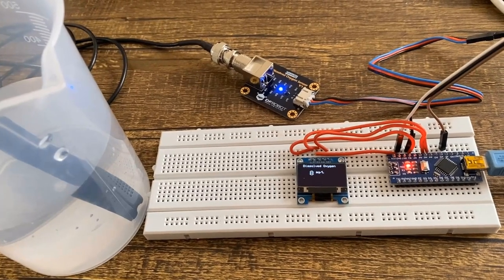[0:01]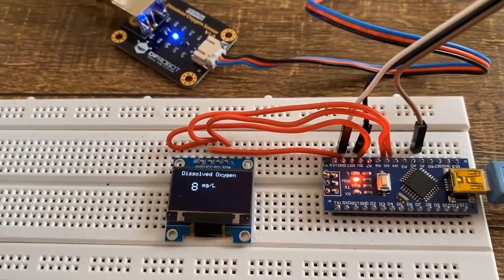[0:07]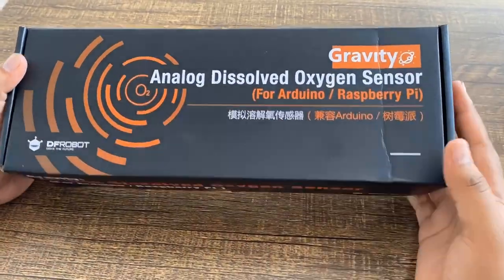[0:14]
In this tutorial, we will learn how to make your own dissolved oxygen meter. A dissolved oxygen meter measures the dissolved oxygen of any liquid and is measured in milligrams per liter.
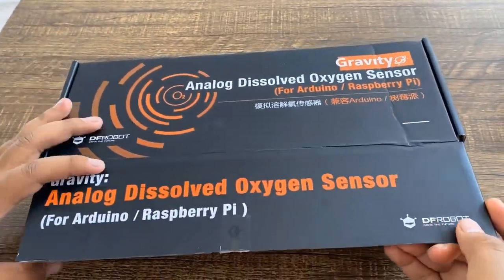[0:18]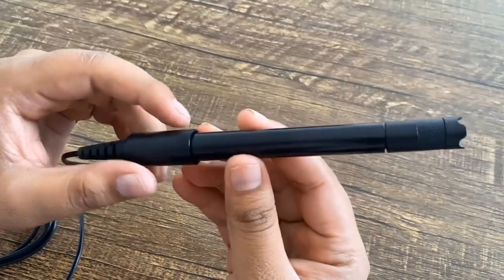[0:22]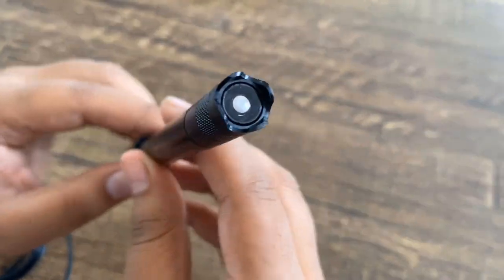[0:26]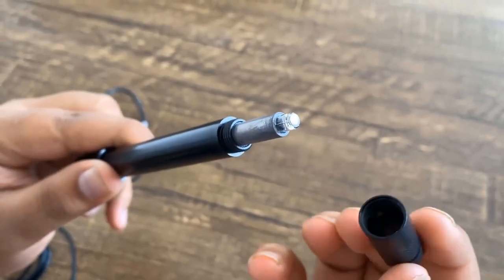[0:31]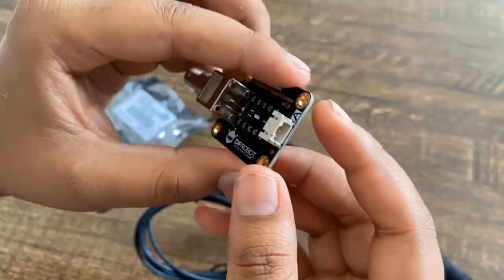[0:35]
Recently, I purchased an analog dissolved oxygen sensor from DFRobot. So you can see this is a Gravity analog dissolved oxygen meter kit from DFRobot. This is a low power dissolved oxygen meter with a galvanic probe that works between 3.3 volt to 5 volt. It has a replaceable membrane cap at the top with a simple BNC connector to signal connector board.
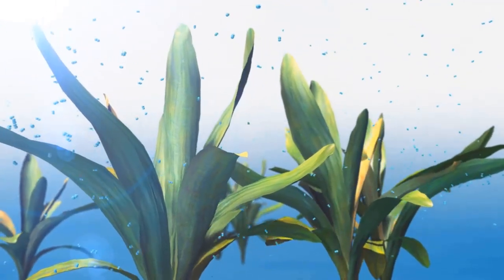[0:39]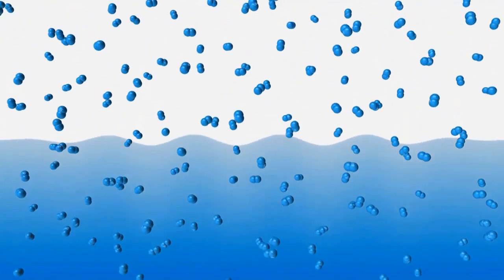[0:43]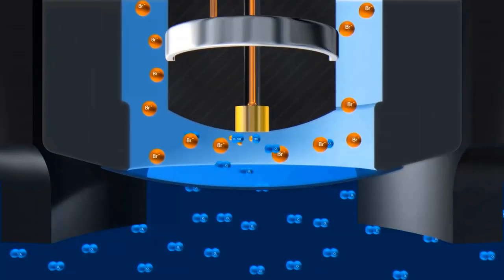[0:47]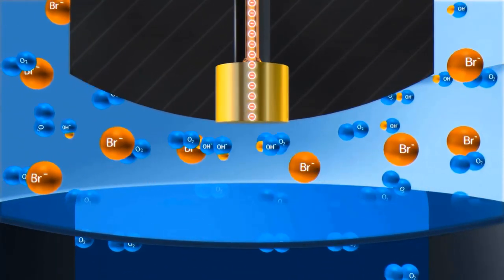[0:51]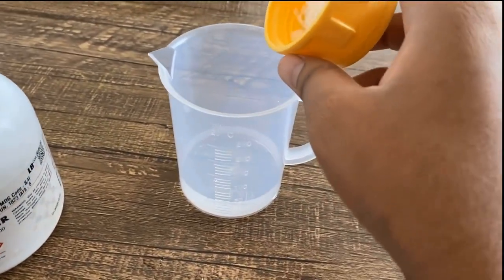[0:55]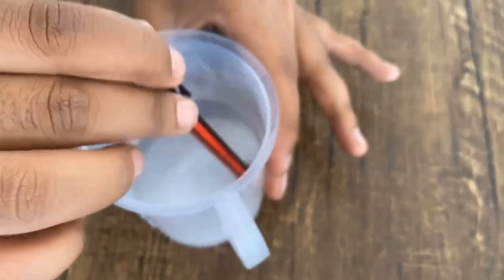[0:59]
We will learn how oxygen gets mixed in water, or the source of oxygen. We will also learn about the principle behind the dissolved oxygen meter and its partial pressure as well as the oxygen concentration in water. Then, using a sodium hydroxide crystal and water, we will make a filling solution for the probe. This solution is filled in the membrane cap and used with the sensor.
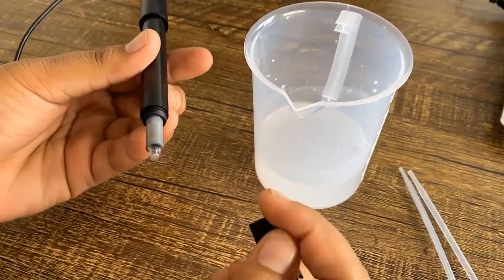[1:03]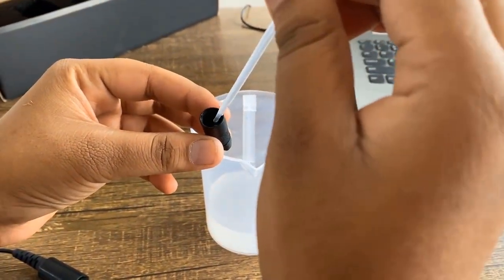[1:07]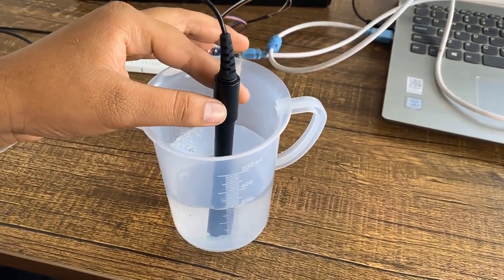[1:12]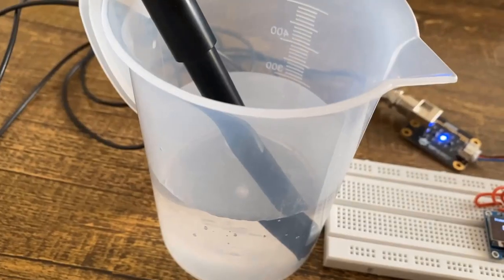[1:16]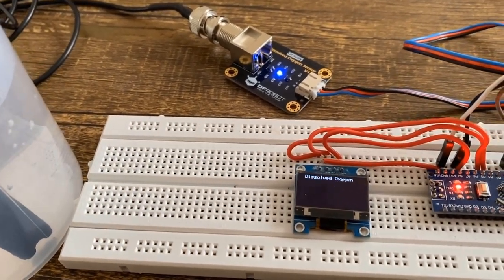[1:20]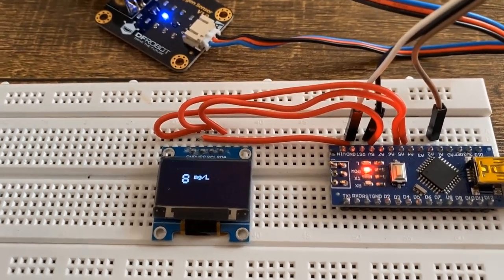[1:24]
The method for filling the solution as well as the quantity of the solution and its strength is also explained in this video. And finally, we will learn a method for calibrating the sensor. When the calibration factor is known, we will make our own dissolved oxygen meter using an Arduino board and OLED display. This dissolved oxygen meter can be used in aquaculture, aquatic life, environmental monitoring, and for laboratory applications. So, without any delay, let's get started.
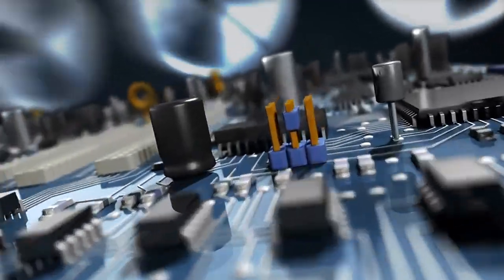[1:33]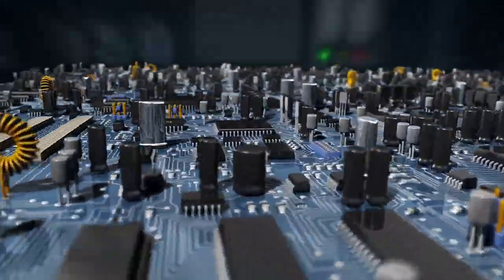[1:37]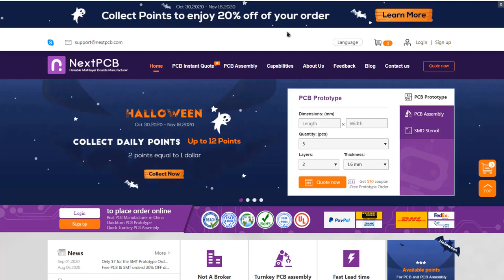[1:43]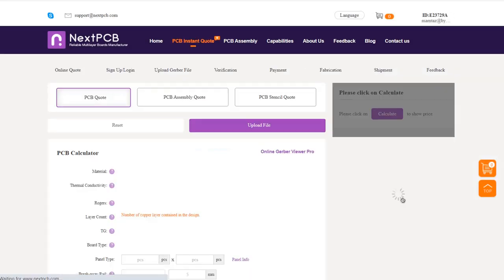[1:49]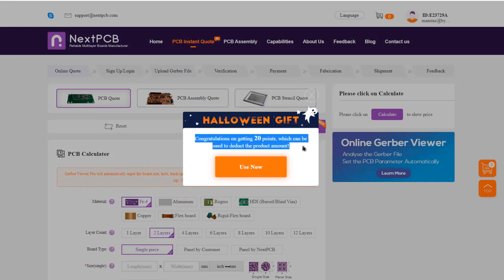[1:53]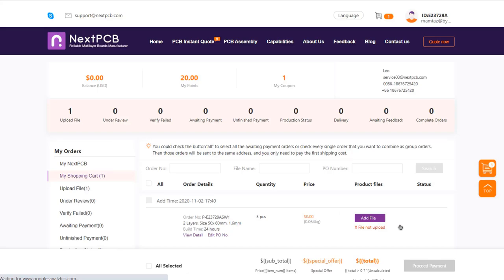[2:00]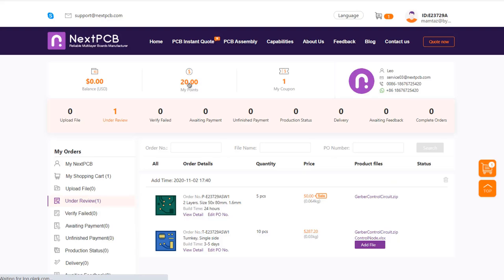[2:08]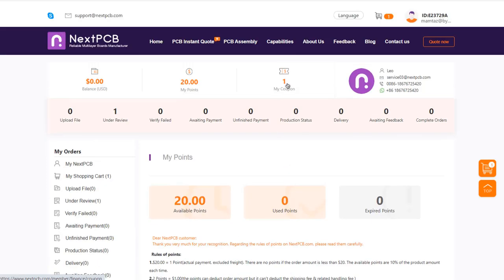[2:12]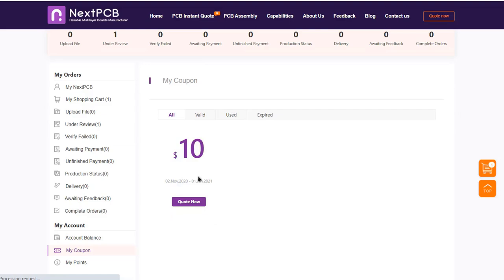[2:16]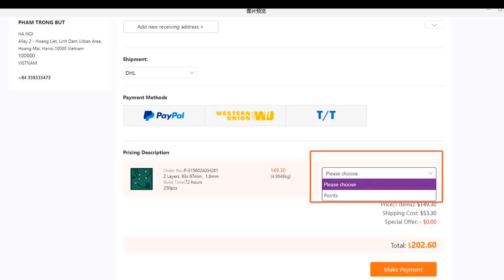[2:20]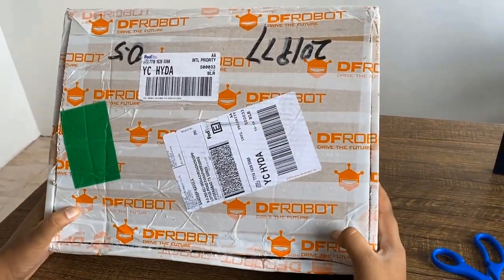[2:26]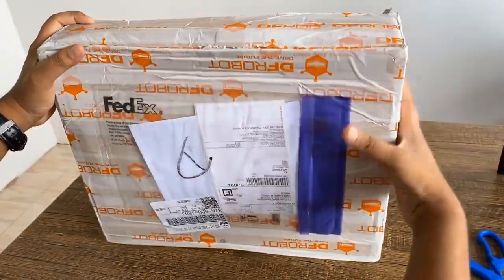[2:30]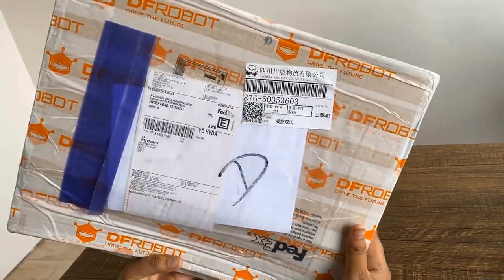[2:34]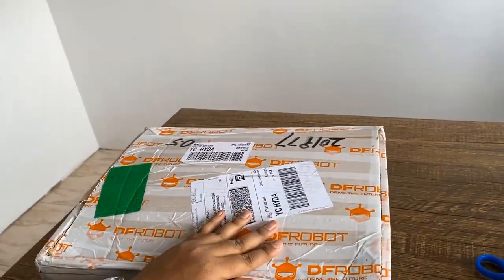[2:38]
So this is the courier from DFRobot sent through FedEx a couple of days ago. I received it after 1 week. The package looks very large but weighs very little. So now let me open the packet and check what is inside the box.
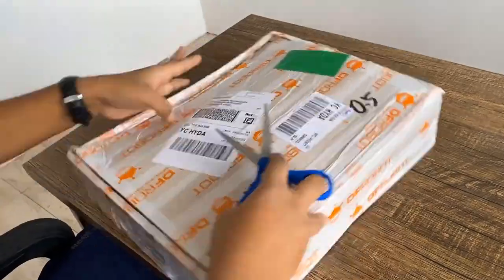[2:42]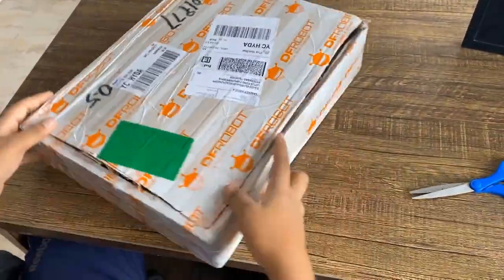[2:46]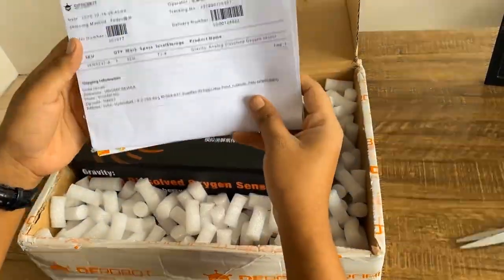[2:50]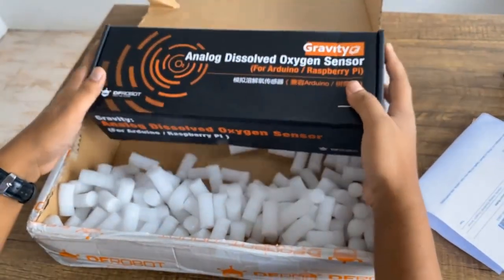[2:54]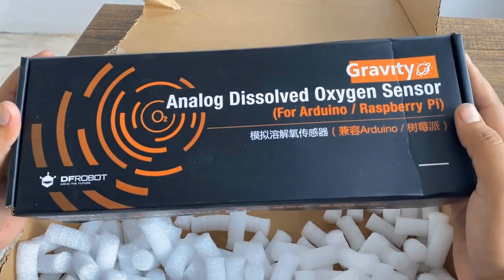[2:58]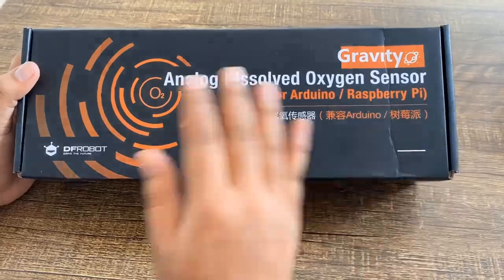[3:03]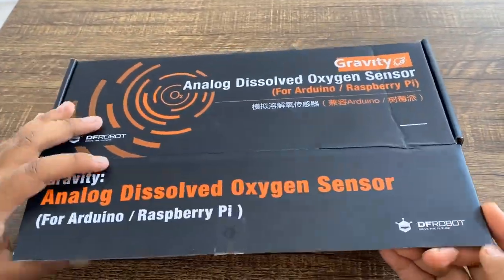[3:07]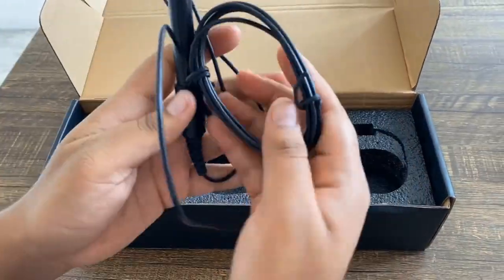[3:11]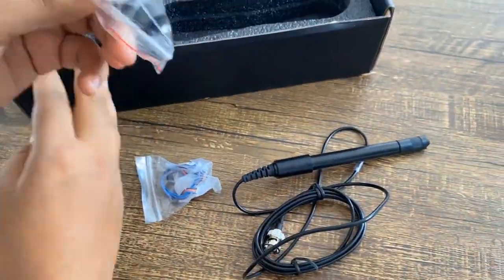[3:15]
So here we go, it has another box that contains the sensor kit. This is a Gravity analog dissolved oxygen sensor kit that can be used for Arduino, Raspberry Pi, and ESP8266 or ESP32. Well, inside the package we have multiple tools that need to be assembled together. So I can see there are 4 to 5 different units.
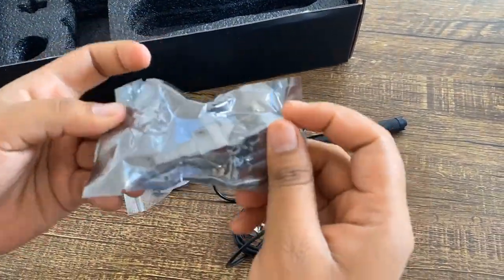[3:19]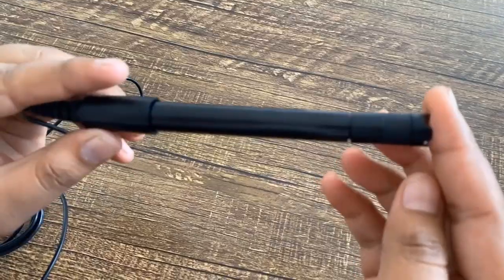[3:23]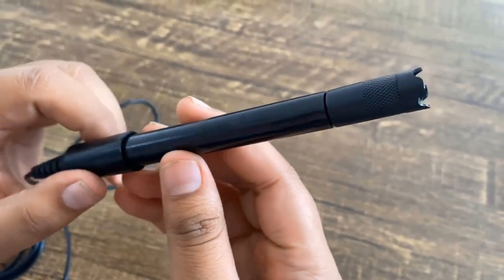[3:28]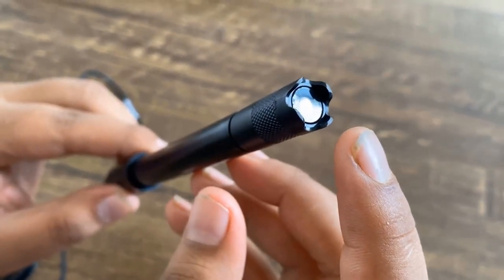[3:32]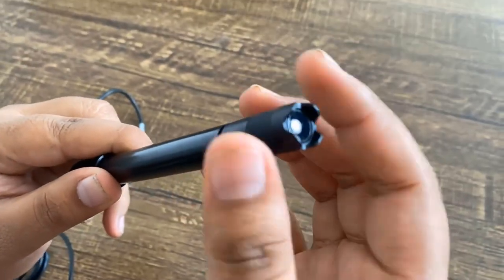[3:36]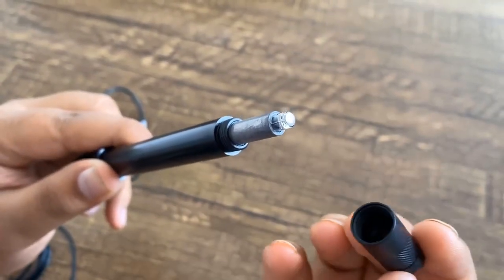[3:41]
This is a dissolved oxygen sensor probe that works at 3.3 volt or 5 volt. The output voltage is 3.3 volt and it has the ability to measure dissolved oxygen from 0 to 20 mg per liter. At the top of the sensor, there is a membrane cap that is removable and replaceable. This is a galvanic probe whose working will be explained later in this video.
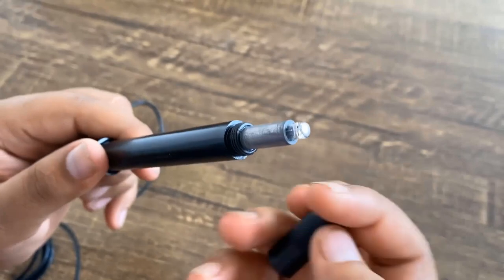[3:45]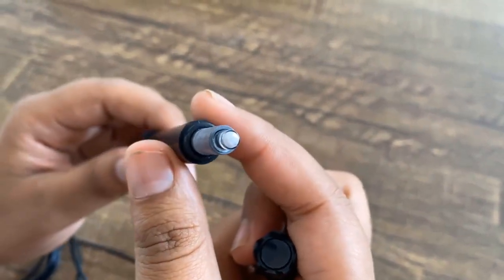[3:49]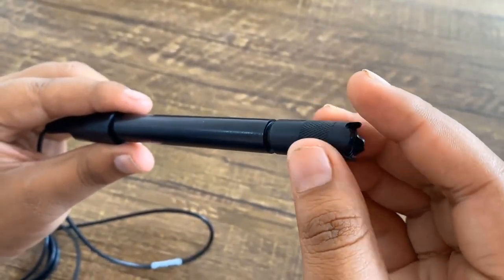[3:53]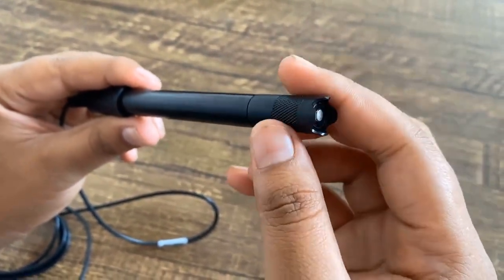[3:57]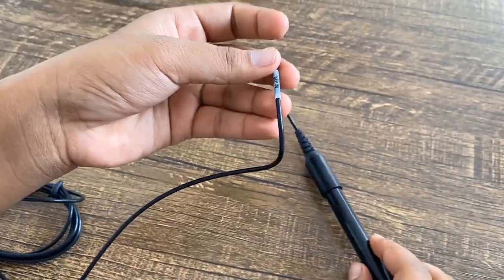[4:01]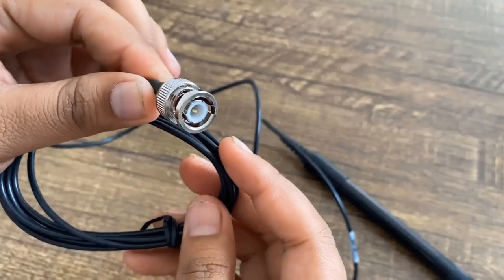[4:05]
Galvanic dissolved oxygen sensors consist of two electrodes, an anode and a cathode. Both of these electrodes are immersed in electrolytes. An oxygen permeable membrane separates the anode and cathode from the measured water. This chemical reaction produces an electrical signal which is measured by Arduino. The cable length is 2 meters and has a BNC connector at the end.
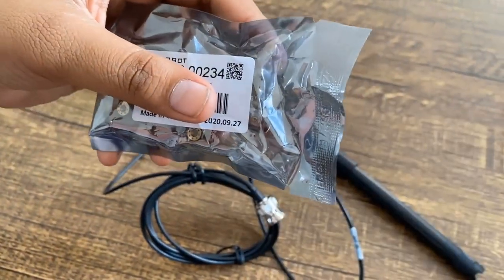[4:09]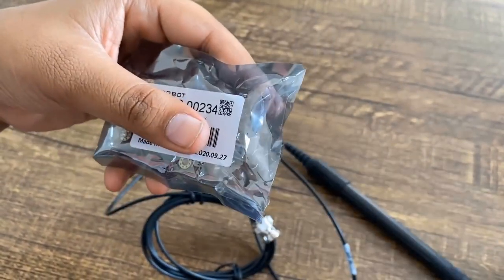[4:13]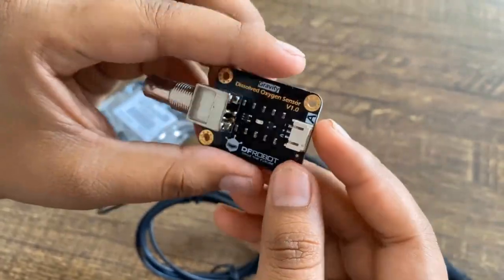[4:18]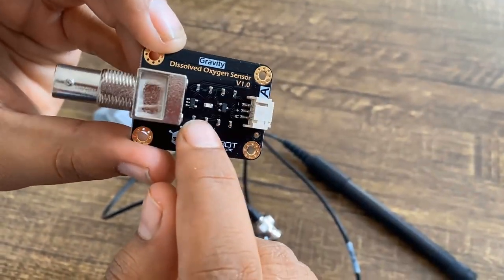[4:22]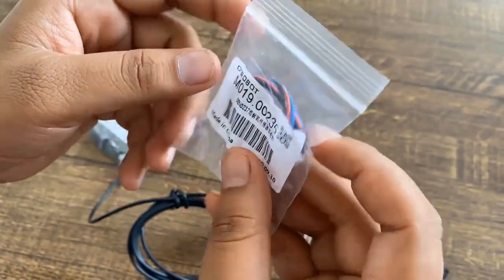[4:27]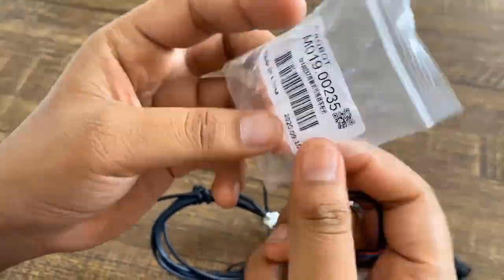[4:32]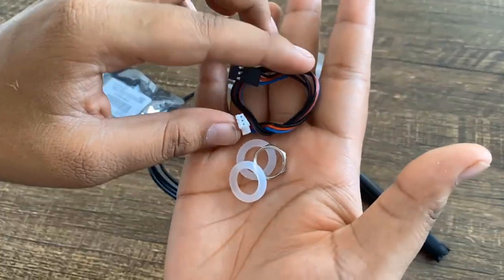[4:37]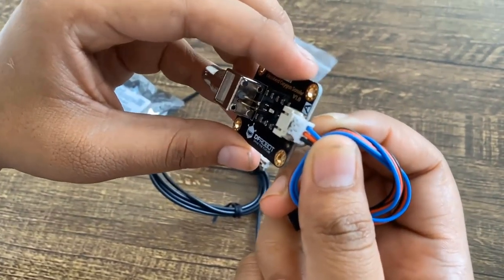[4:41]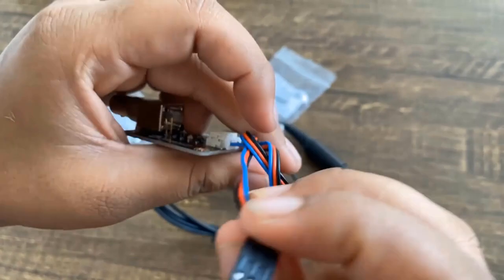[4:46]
The signal converter board also has a BNC connector which can be directly connected to the galvanic probe. The signal converter board basically amplifies the minor voltage difference to a readable signal that can be detected by Arduino. The signal converter board is plug and play and has good compatibility. On the other end, it has 3-pin connectors with VCC, GND, and analog output pin. Using the 3-pin connector, the sensor can be directly connected to any microcontroller unit. The signal converter board takes 98% full response within 90 seconds.
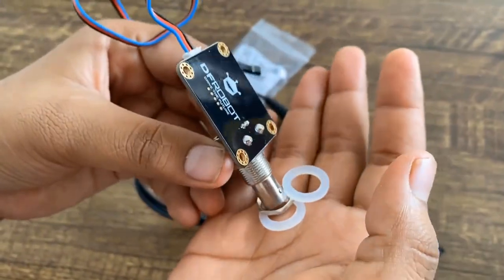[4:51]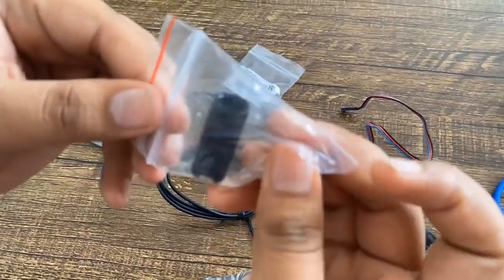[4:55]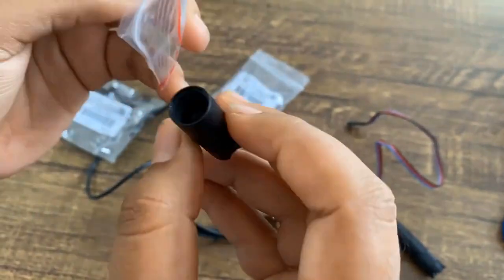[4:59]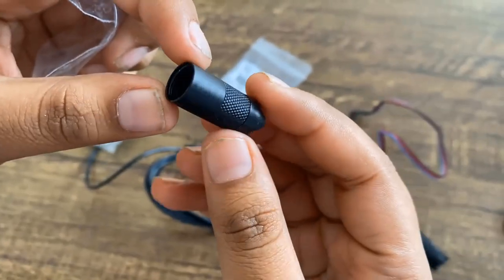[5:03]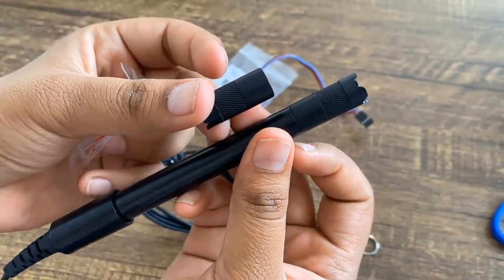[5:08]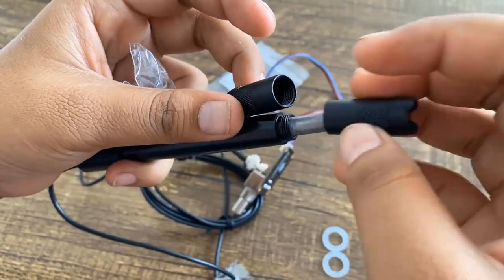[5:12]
The oxygen permeable membrane in the membrane cap is sensitive and fragile. Use caution when handling it. Fingernails and other sharp objects should be avoided. This is a membrane cap which needs to be maintained every 1 to 2 months in muddy water and 4 to 5 months in clean water. The solution replacement period is every 1 month.
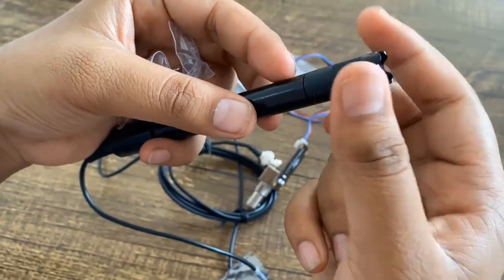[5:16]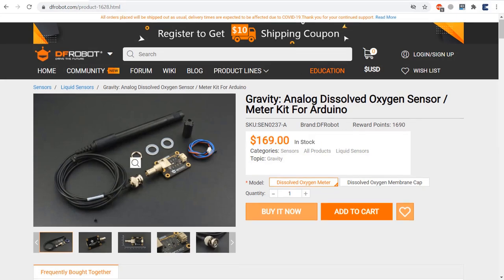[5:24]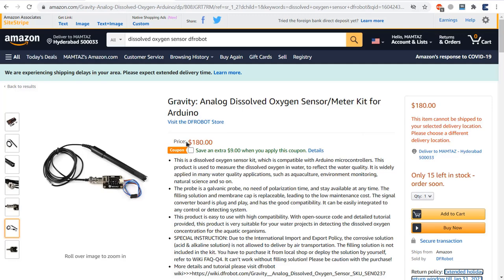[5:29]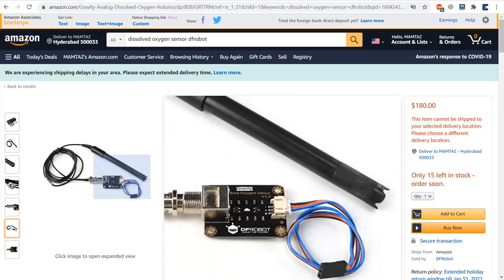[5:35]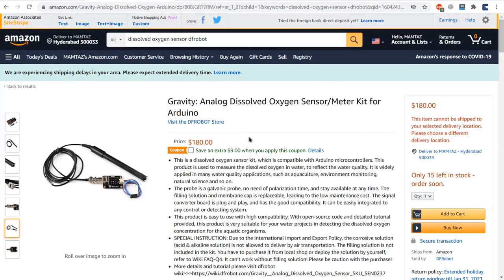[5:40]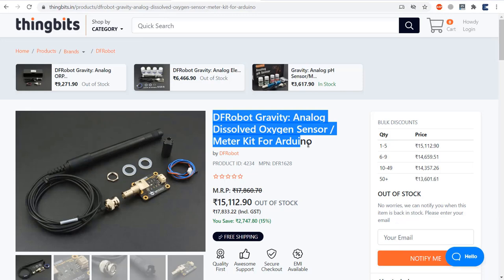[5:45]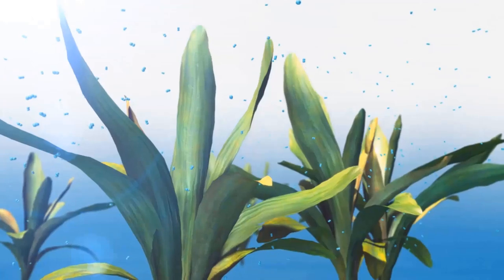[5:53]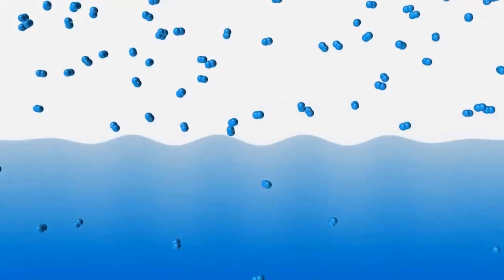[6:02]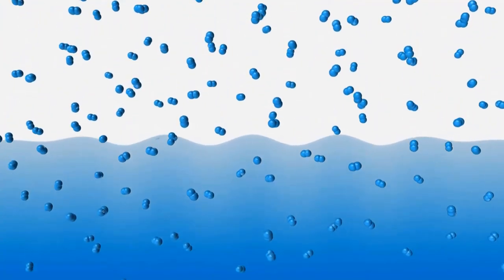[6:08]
Now let's learn about the principle behind the oxygen measurement. Oxygen penetrates the liquid in different ways, for example, through oxygen producing plants, waves, or a gas exchange with the atmosphere. At the water surface, the oxygen molecules migrate from the atmosphere into the water and vice versa. Once the oxygen is in the water, it distributes evenly to achieve uniform distribution in space.
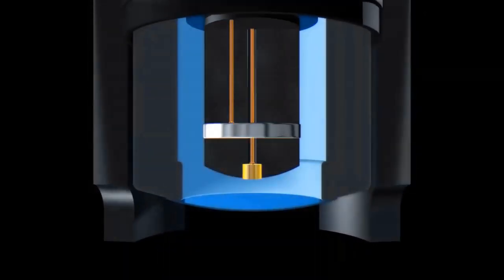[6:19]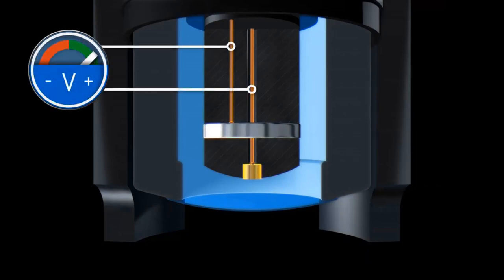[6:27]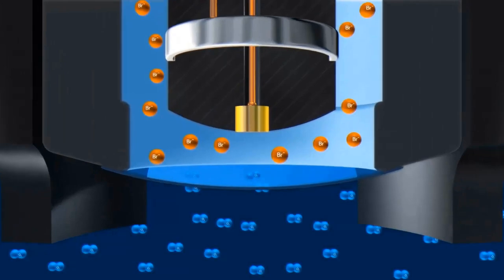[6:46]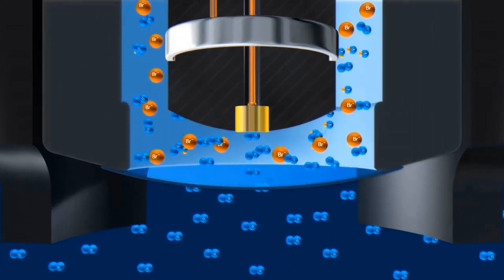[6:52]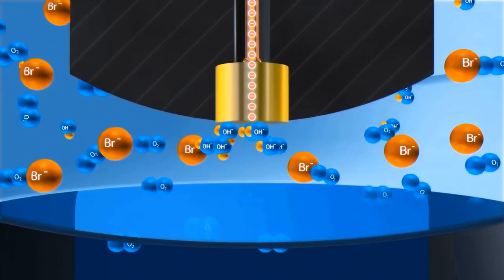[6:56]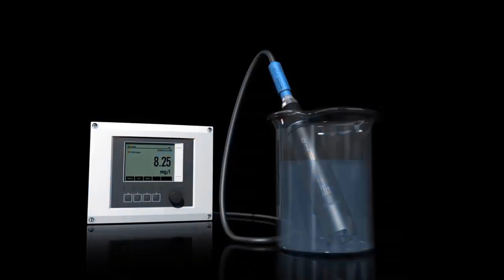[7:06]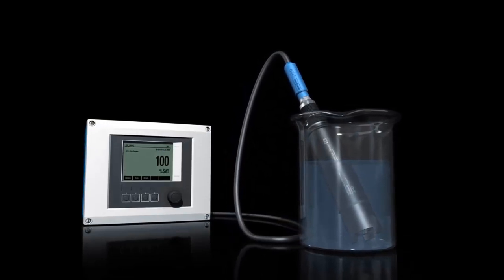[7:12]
A galvanic type sensor usually consists of a gold cathode, also called a working electrode, and a silver anode, the counter electrode. The DC voltage is applied to both the electrodes. The cathode and anode are both located in a reaction chamber that is filled with an electrolyte. The reaction chamber is separated from the medium by a membrane. This porous membrane allows the dissolved oxygen to diffuse into the sensor. When the sensor is immersed in a medium containing oxygen, the difference in the partial pressure of the oxygen between the inner and the outer membrane walls leads to the diffusion of oxygen through the membrane. The diffused oxygen is reduced at the gold cathode in the reaction chamber, resulting in a current flow that is proportional to the amount of transformed oxygen. The current is processed by the signal converter board and displayed as oxygen concentration, partial pressure, or a percentage saturation.
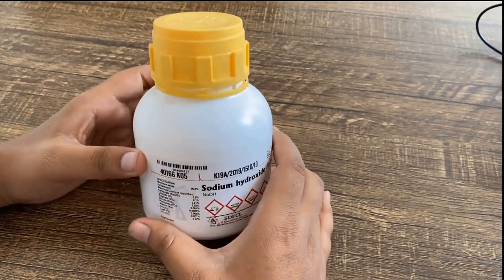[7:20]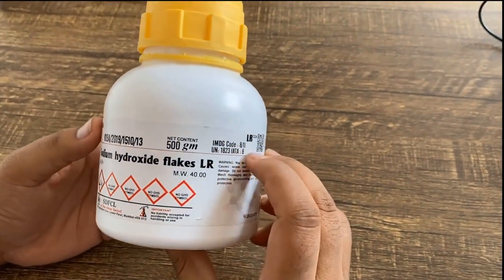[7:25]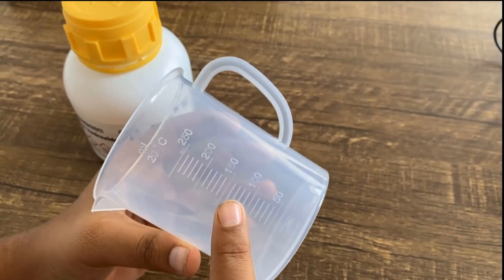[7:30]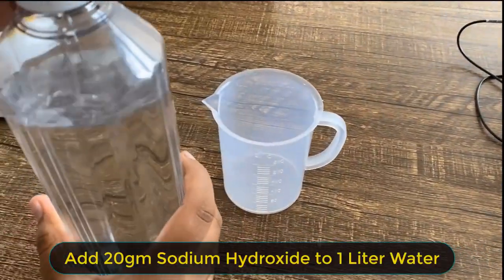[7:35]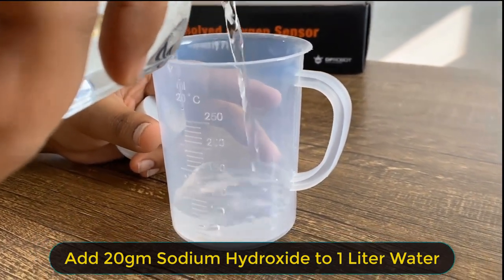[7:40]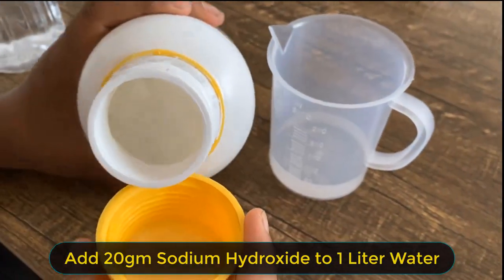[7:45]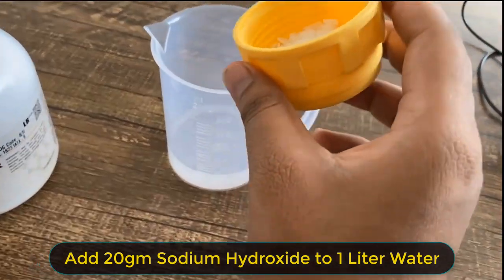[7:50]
Now let us prepare the solution for filling the membrane cap. The solution is prepared using sodium hydroxide and water. The normality of the solution should be 0.5 normal. So you need a few grams of sodium hydroxide and a measuring cylinder. To prepare a 0.5 normal solution, add 20 grams of sodium hydroxide crystals to 1 liter of water. As the sodium hydroxide solution is strongly corrosive, protective gloves should be put on before handling the solution.
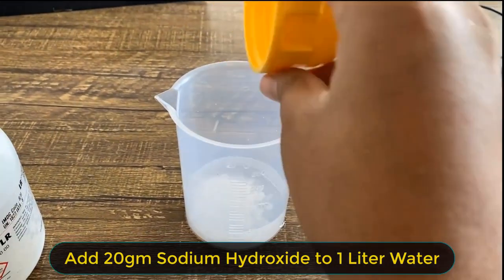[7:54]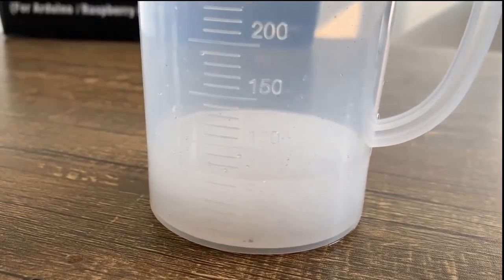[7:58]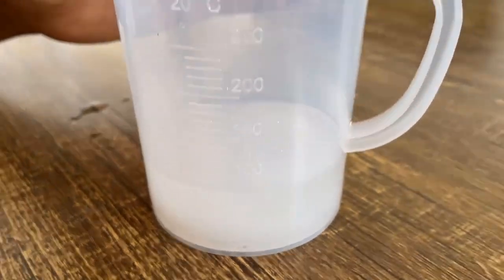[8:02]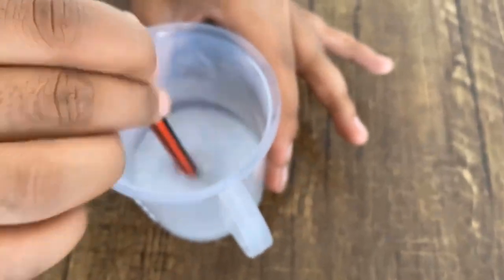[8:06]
If the solution accidentally drops onto the skin, wash your skin with plenty of water immediately. After mixing the NaOH with water, stir it so that the sodium hydroxide completely dissolves in the water. A lot of heat is produced during this process, so let it cool down before using it.
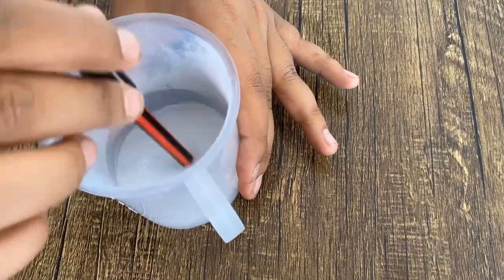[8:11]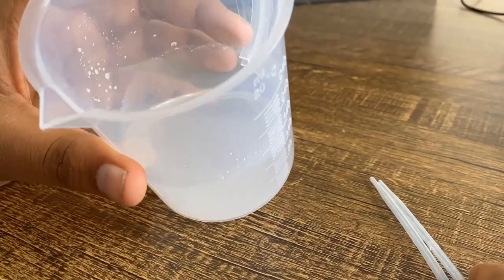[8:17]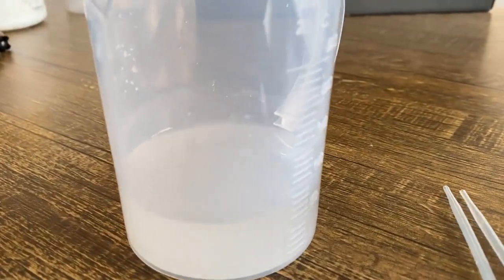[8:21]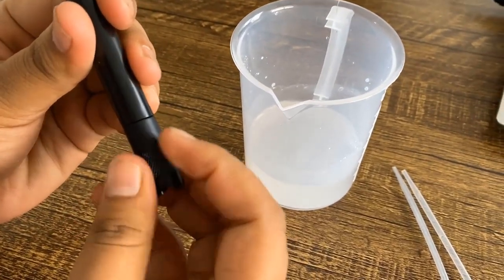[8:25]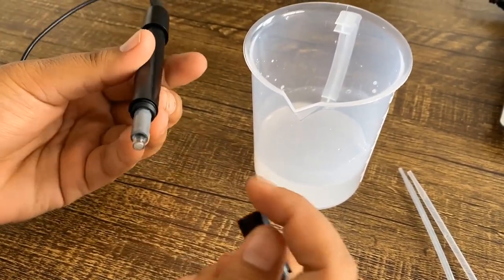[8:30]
Now let us prepare the probe. We need to fill a 0.5 mole per liter NaOH solution to 2/3 volume of the cap. For that, first unscrew the membrane cap from the probe. Now, use this pressure filling pipe to fill the membrane cap.
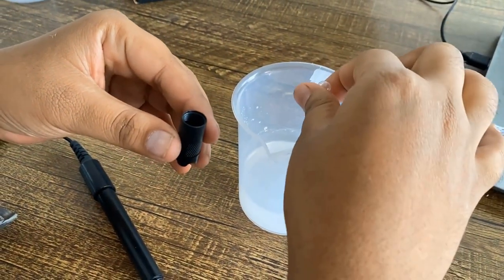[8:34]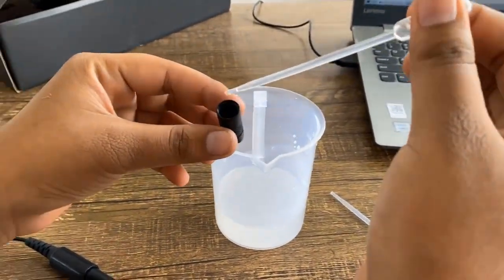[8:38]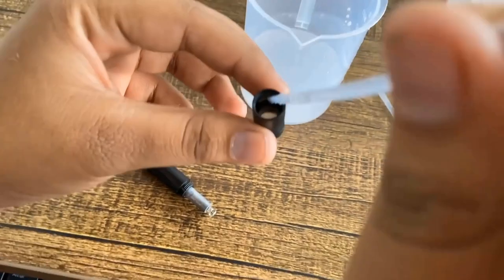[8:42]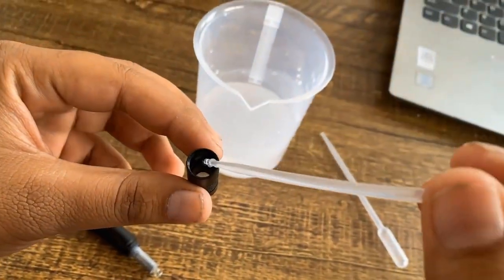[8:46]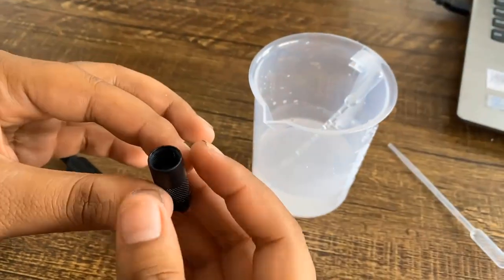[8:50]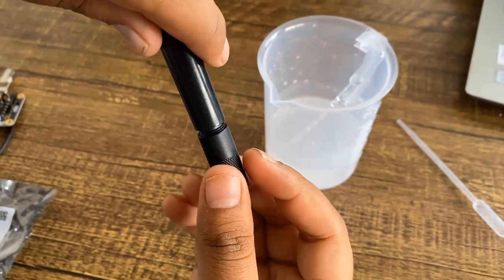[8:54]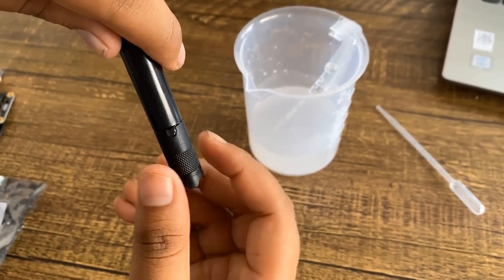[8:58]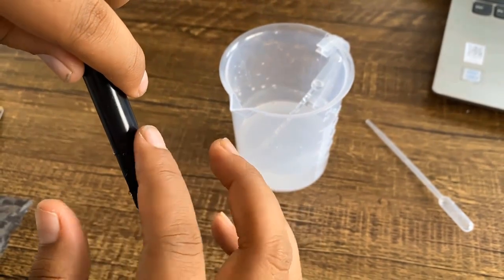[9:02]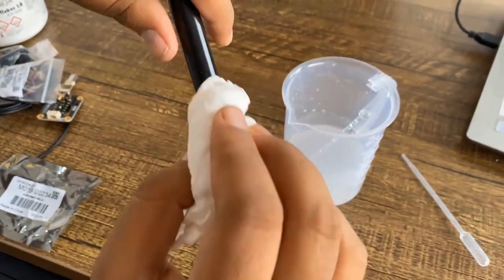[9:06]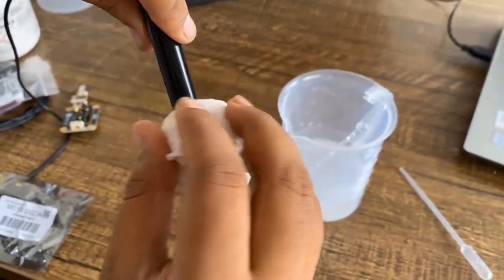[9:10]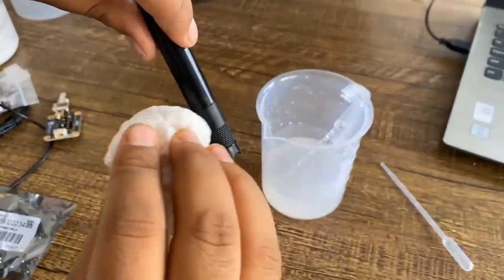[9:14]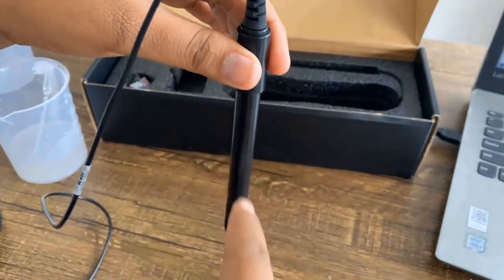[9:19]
Carefully screw the cap back onto the probe. It will be nice if a little bit of solution overflows out of the cap to ensure the probe is fully filled with NaOH solution. The best way is to fill about 2/3 volume of the cap. A little bit of overflow when screwing the cap back onto the probe is okay. Clean the overflowed solution with a tissue. Make sure the probe is in a vertical position with respect to the horizontal plane.
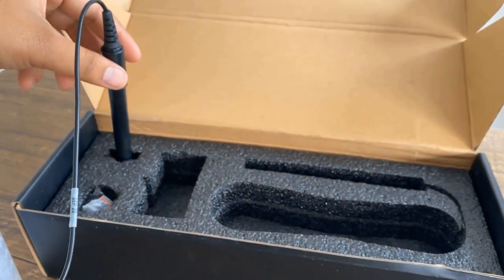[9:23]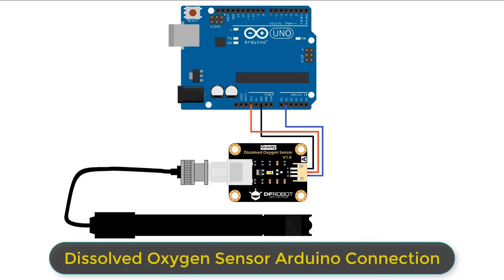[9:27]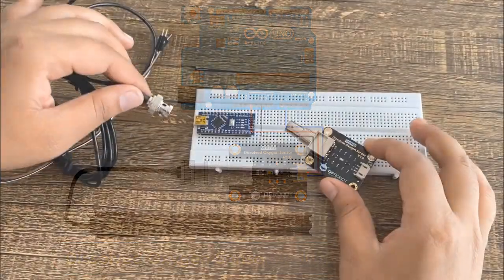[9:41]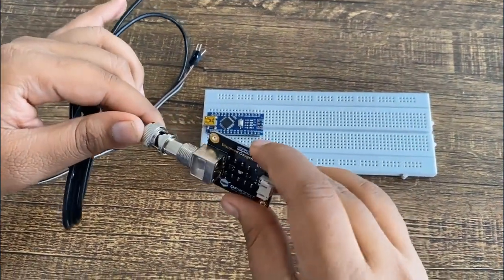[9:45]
When the probe is filled with NaOH solution, it needs to be calibrated. Before calibration, please connect the probe as shown in the following diagram. Connect the probe to the BNC connector on the signal converter board. Connect the board to the analog input of the Arduino Uno board. So here is how I am assembling the complete package into a single unit.
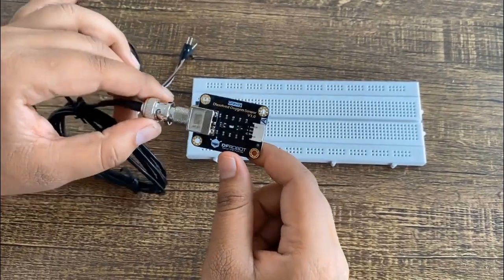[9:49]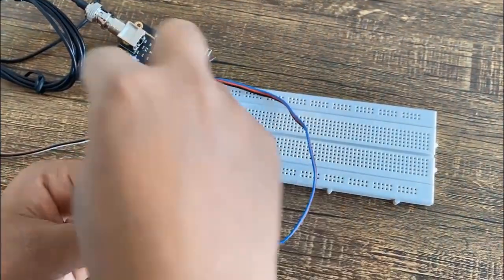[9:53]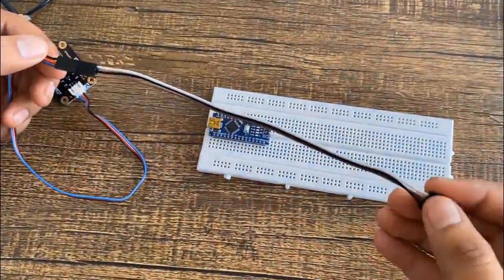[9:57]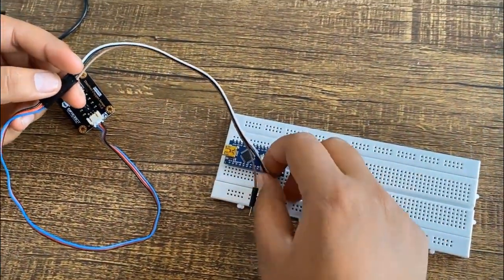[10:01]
First, connect the signal converter board to the probe. Then, the 3-pin connector is connected. Connect its VCC to 3.3 volts, connect its GND to GND, and analog out to A1 of the Arduino.
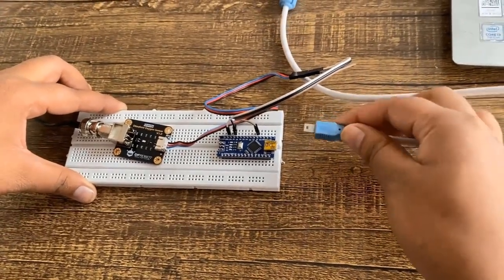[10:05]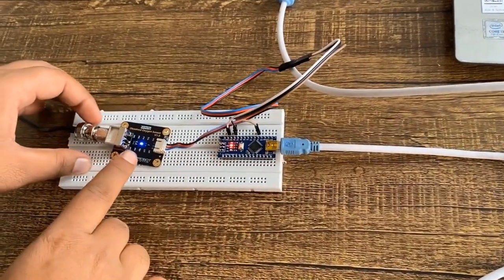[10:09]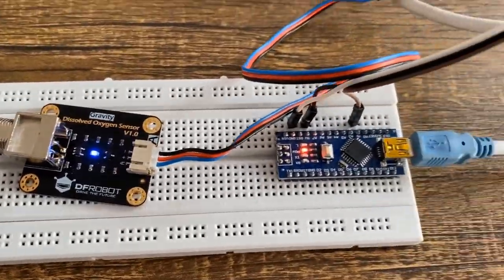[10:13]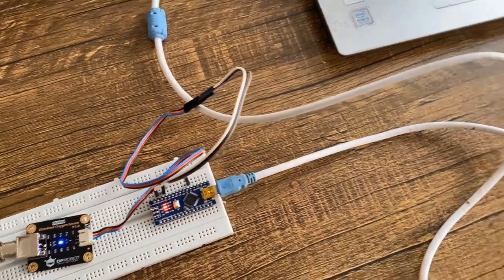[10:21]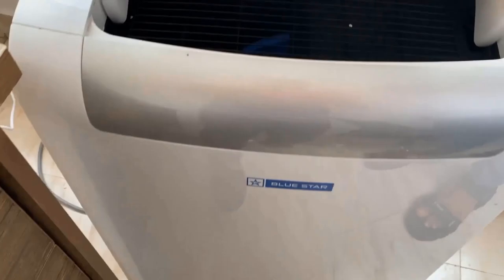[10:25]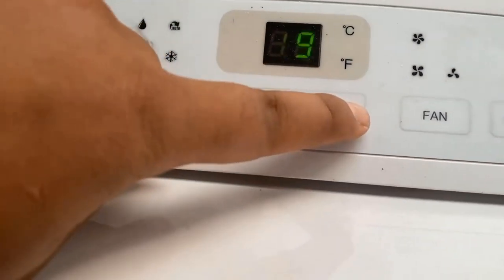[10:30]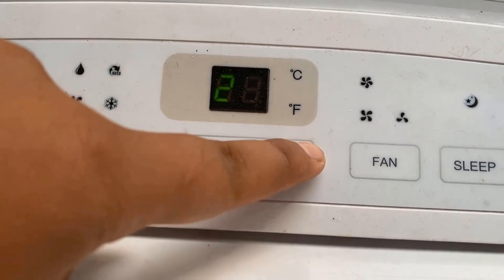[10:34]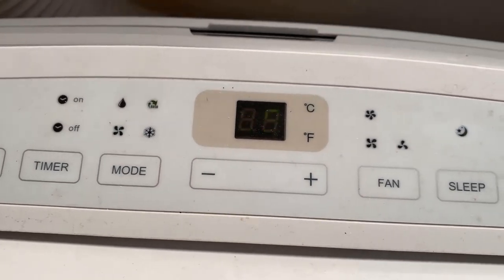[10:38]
Once the connection is done, it's time to calibrate the sensor. For calibration, the room temperature should be 25 degrees Celsius. So I'm adjusting the room temperature. Once the temperature of the room reaches 25 degrees, you can start the calibration process.
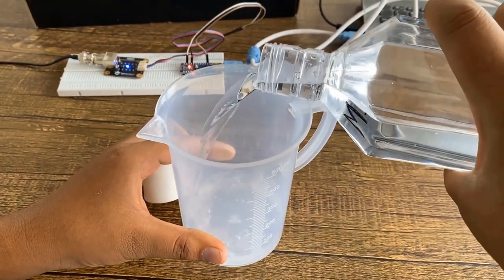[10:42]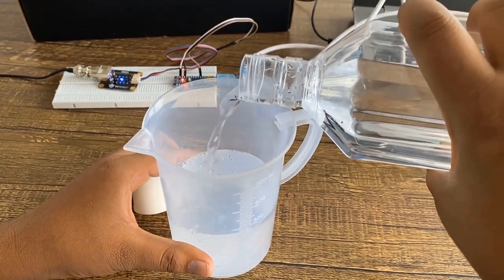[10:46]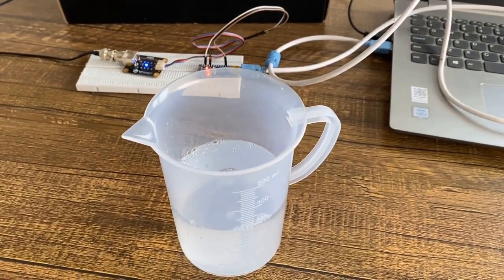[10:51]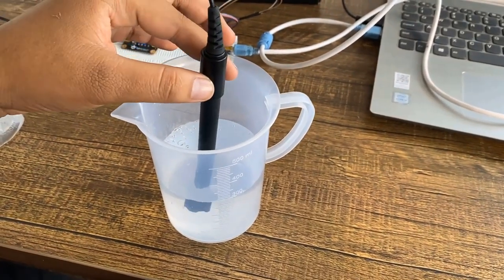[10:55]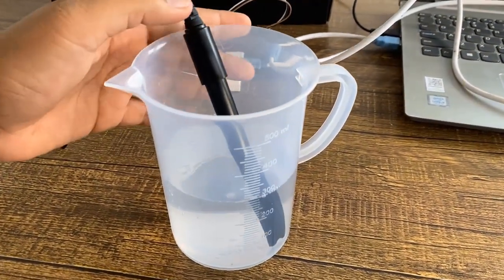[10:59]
Fill normal water in a glass measuring flask. There are multiple methods of calibration like single point calibration and two point calibration. You can follow any method. I selected the single point calibration method. In this method, only calibrate the saturated dissolved oxygen at a fixed temperature. This is suitable for use when the temperature is stable.
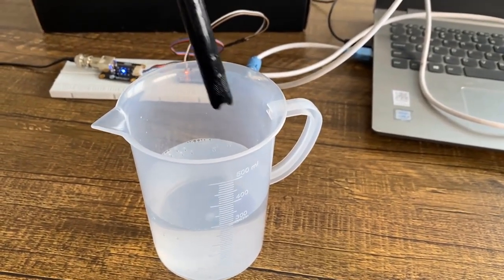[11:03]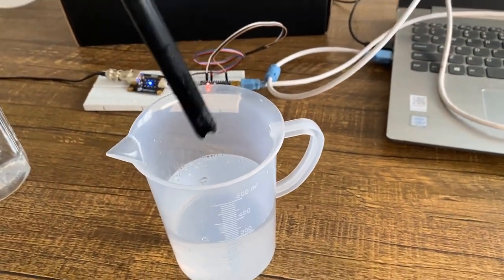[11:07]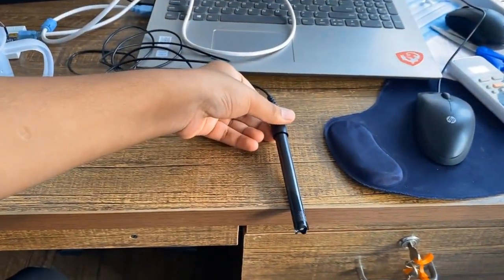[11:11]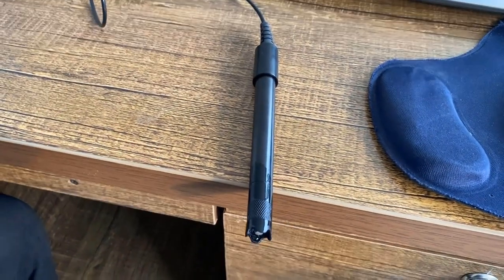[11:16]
After probe preparation, wet the probe in pure water and shake off excess water drops. Expose the probe to the air and maintain proper airflow. Please don't use a fan to blow. So let's see the calibration code now.
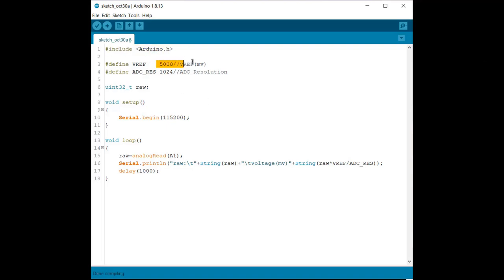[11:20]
This is the header file, and a reference voltage of 5 volt is set along with a 10-bit ADC resolution of 1024. Using this formula, we are calculating the output voltage. So select the Arduino board that you are using and also select the port, then upload the code.
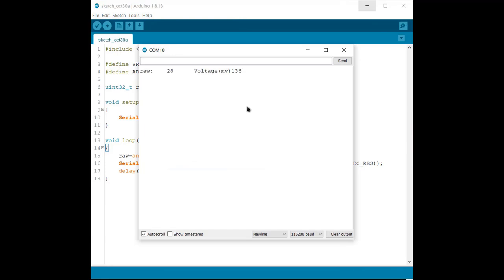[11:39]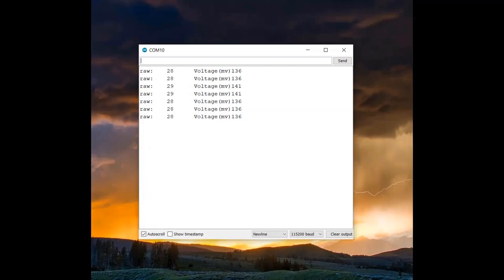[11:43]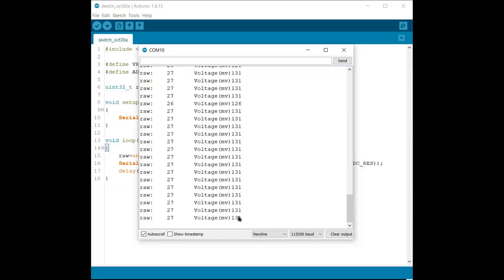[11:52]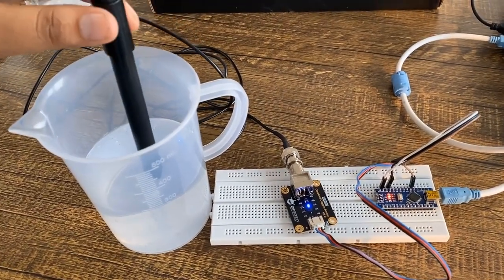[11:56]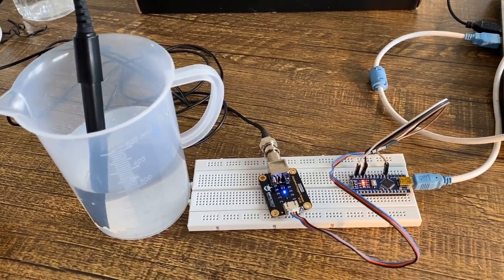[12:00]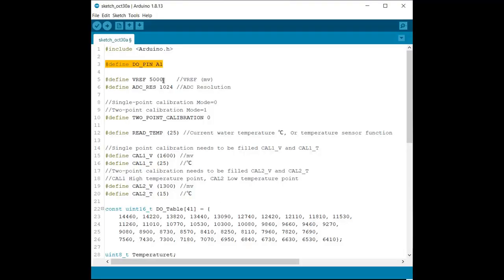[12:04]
And let's see the final code now. We are defining the A1 pin as an output pin. If you are going for single point calibration, then set this line as 0. Else, if you selected 2-point calibration, set this mode as 1. The default room temperature is 25 degrees Celsius. In the following line, change this voltage parameter with the calibrated value that you got recently.
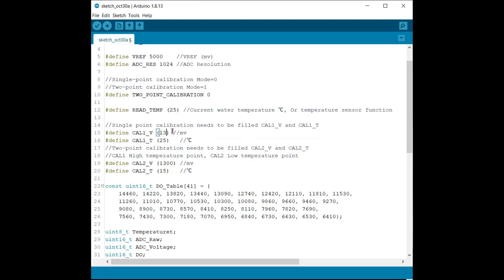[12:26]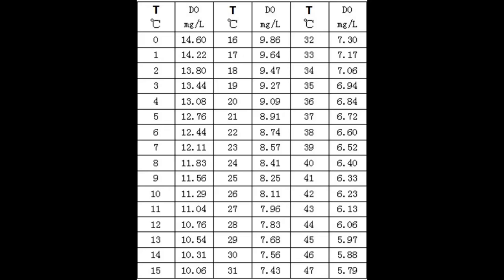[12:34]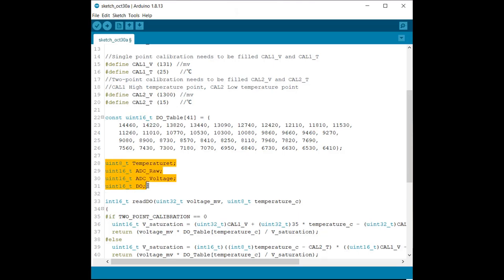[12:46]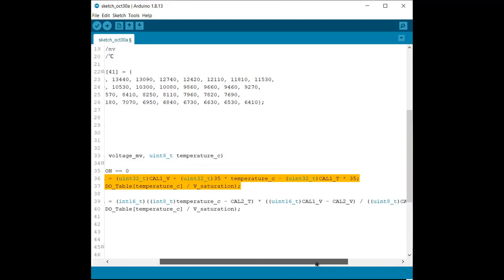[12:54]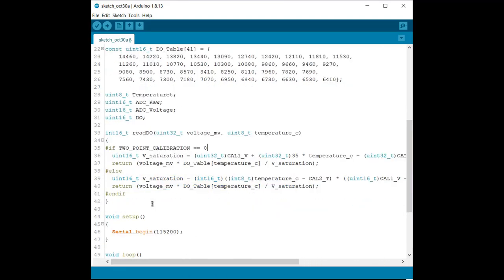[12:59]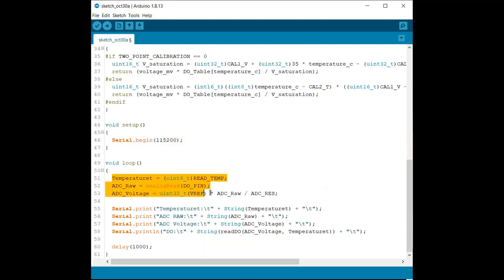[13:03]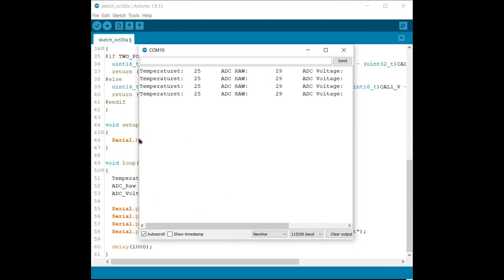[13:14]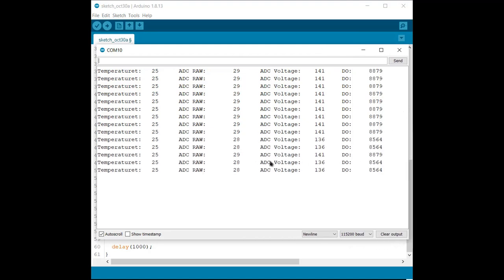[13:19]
Using this formula, all the parameter values are calculated. The second formula is ignored due to the mode selection at the initial code. Under the loop function, you can check we are printing all the defined parameters on the serial monitor. Well, now you can upload the code to the Arduino board, then open the serial monitor. So you can see the value of temperature, ADC raw and ADC voltage along with the dissolved oxygen value in microgram per liter. To convert that to milligram per liter, divide the value by 1000.
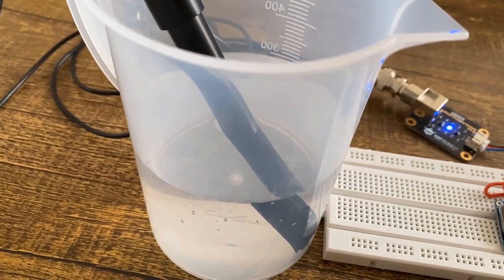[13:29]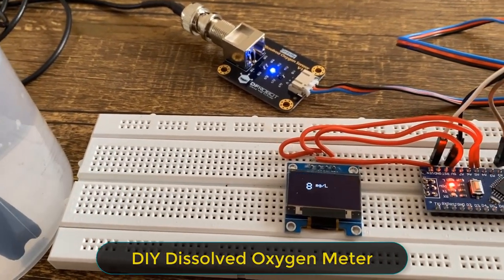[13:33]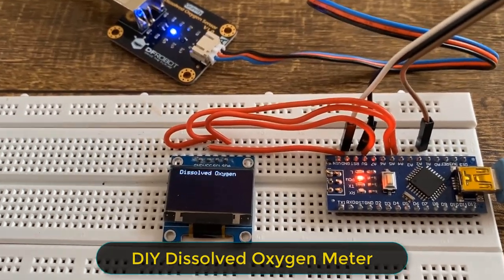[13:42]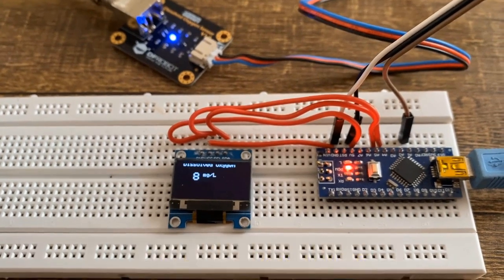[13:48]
Now let us make a portable dissolved oxygen meter. For that, we need to add an OLED display to the board. The OLED display is connected through I2C pins, that is SCL and SDA. So here is the final dissolved oxygen meter. The dissolved oxygen is measured in terms of milligram per liter and is displayed on the OLED display. I have modified the code after making this video, where you can display up to 2 digits after the decimal point.
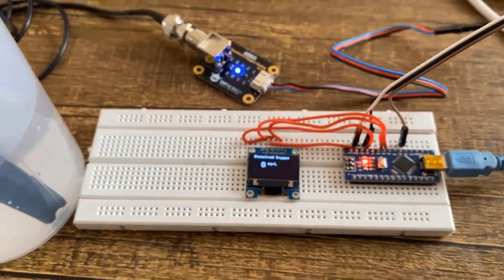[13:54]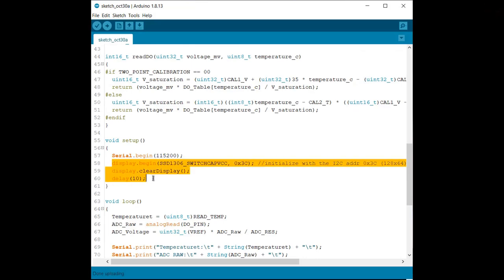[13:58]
The code is simple again. There is no change in the code. We have only added a few lines related to the SSD1306 OLED library.